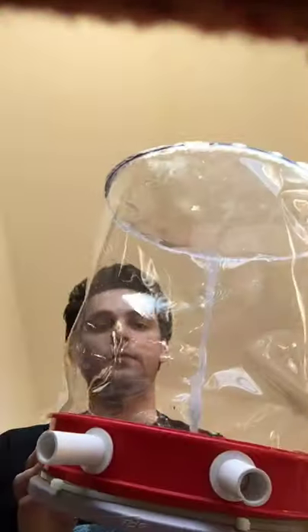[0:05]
Today I'm going to be showing you how you can manufacture a NIV helmet at home, and as far as material costs, this was a little bit less than $20 for me to make. And these have proven to be really effective in helping to treat COVID-19 for two main reasons.
The first reason being that you hook this up to the hospital's air supply directly, so there's no need for a ventilator. And as some of you may have heard, there is a worldwide shortage of ventilators right now, and this has been a real issue with COVID-19. This helps bypass that. The second reason this can be really helpful is once the patient's head is inside, they're in an enclosed environment. So when they're coughing and sneezing, it's not going to be putting the medical staff at nearly as high of a risk.
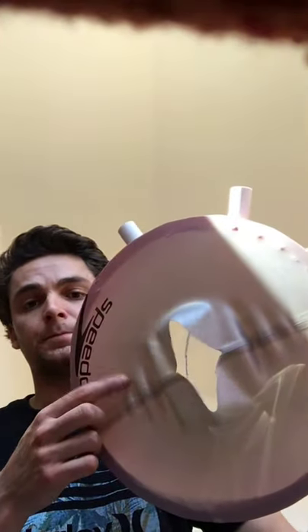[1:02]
So the materials you are going to need: I purchased a clear PVC film, which is this portion, and I bought it off McMaster-Carr.com. I got 0.016 inch thick. And you're also going to need to buy a 5 gallon bucket. You're also going to need to get a swim cap, and you're going to need zip ties. You're going to need to either 3D print these parts, and I will put a link to the STL to 3D print in the description of this video. But alternatively, you could also go to a hardware store and purchase these as PVC fittings.
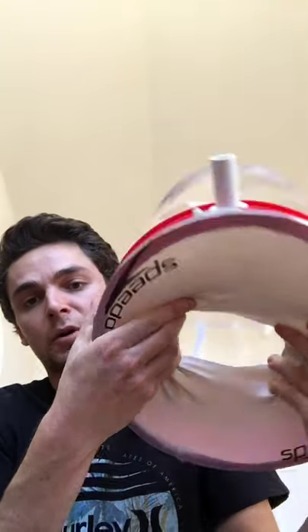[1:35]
And then as far as tools, you're going to need to purchase a glue gun. You're also going to need a jigsaw and a drill. I'm going to show you how easy this is to put on. So I'm just going to go ahead and take my hand, widen the hole here on the bottom, and just stick my head through.
So the first thing we're going to be doing is we're going to make the collar for the NIV helmet. So I went ahead and just bought a 5 gallon bucket. And what I'm going to do is I'm going to be taking out this metal hook, because we're not going to need that. And I'm going to take my drill, and I'm going to be cutting two holes. It doesn't really matter the diameter of the holes. I mean, you don't want to do huge, but in this case, I'll be doing like 1/8 of an inch. And this is really just to make a pilot hole for me to use my jigsaw.
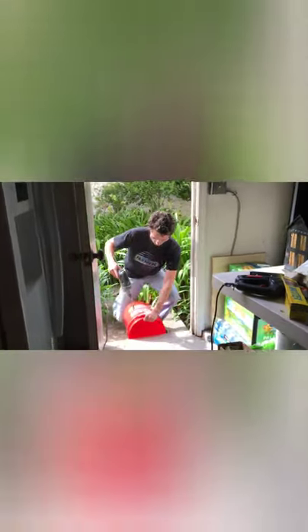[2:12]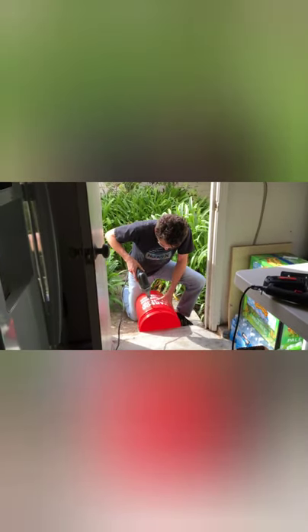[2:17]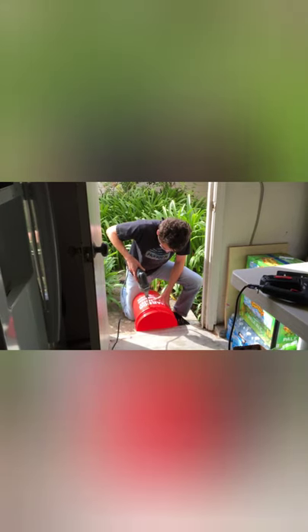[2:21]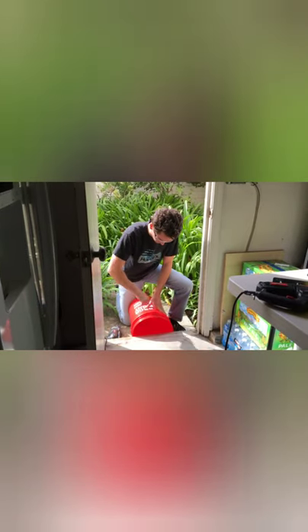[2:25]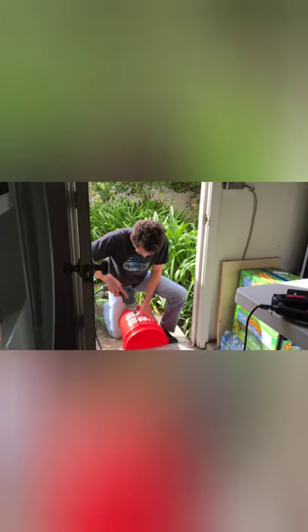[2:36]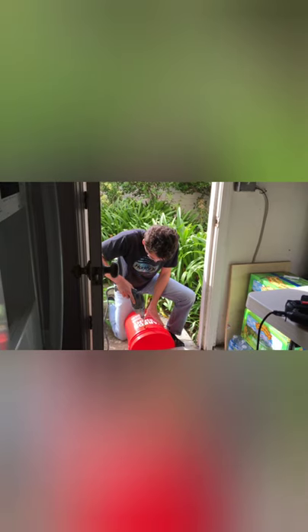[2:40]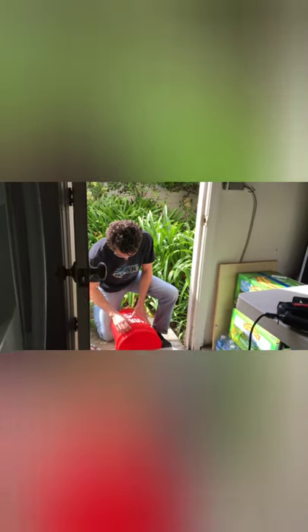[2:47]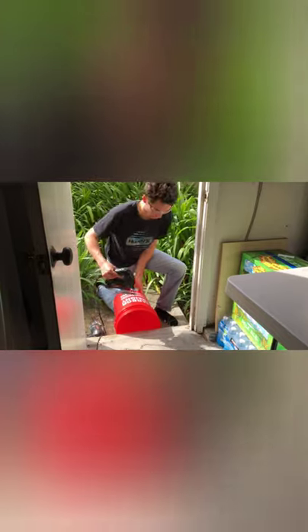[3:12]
That hole's not quite big enough, so I'm just going to cut a second one just to make sure I have plenty of room for the jigsaw blade to go in. Okay. So now I'm going to go ahead and take my jigsaw. Now the idea here is I'm going to be cutting all the way around, so luckily I have this little sort of lip here to allow me to guide along. But what I'm going to be doing is just having a hard surface behind it, so it's not going to go anywhere. I'm going to slide the jigsaw blade in, I'm going to begin to cut, and as I'm cutting I'm just going to be rotating the bucket by hand.
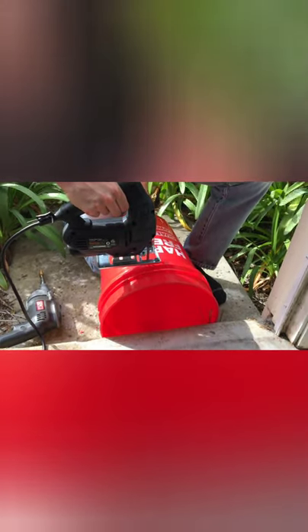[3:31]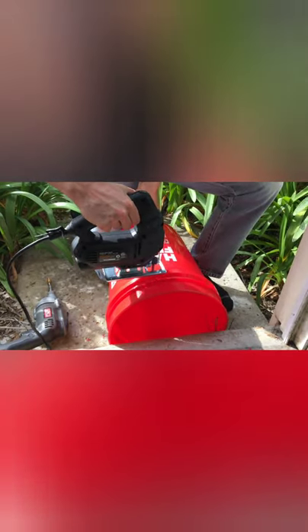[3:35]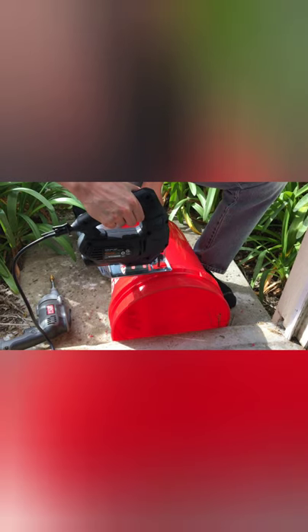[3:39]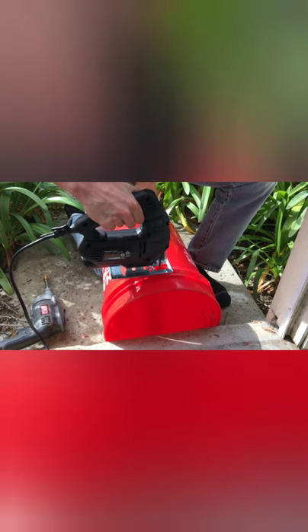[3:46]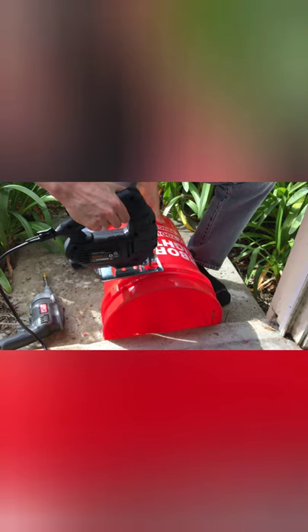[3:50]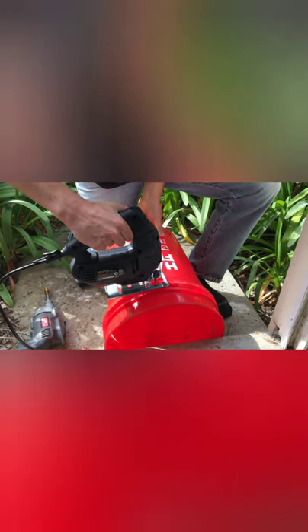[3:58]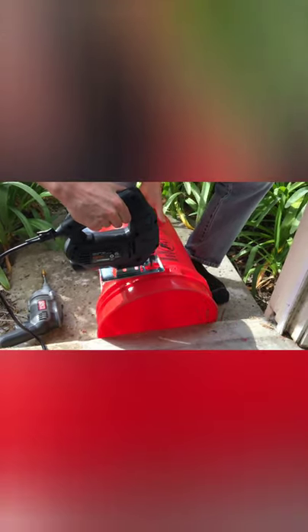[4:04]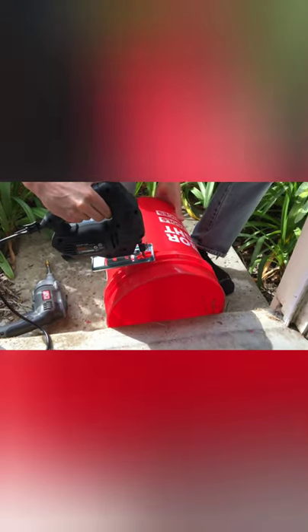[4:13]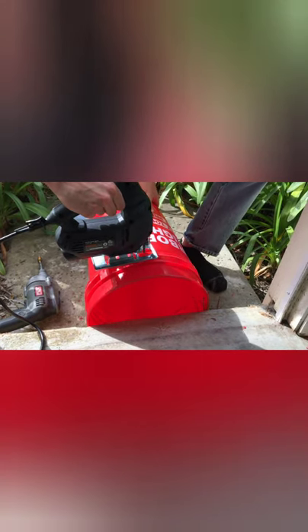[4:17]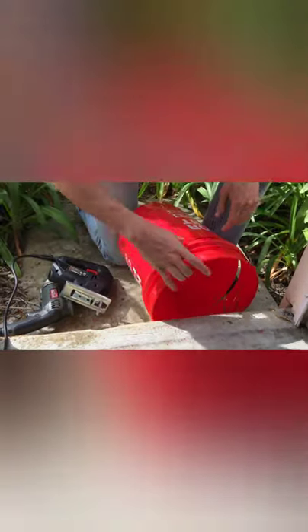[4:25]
Alright, so we have our first piece of the collar cut out, and now what we're going to be doing here is, the collar is two pieces, so we have the inner and outer piece. So what I'm going to do now is I'm going to go ahead and put that upside down. What I'm going to do now is I'm going to go ahead and slide the piece we just cut over the other piece, and then we're going to make a secondary cut. Same idea, we can just use this as a guide.
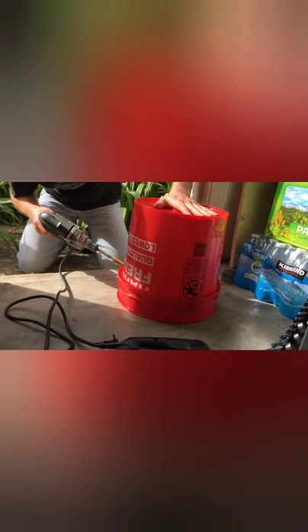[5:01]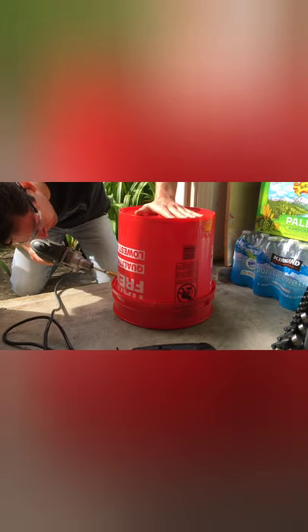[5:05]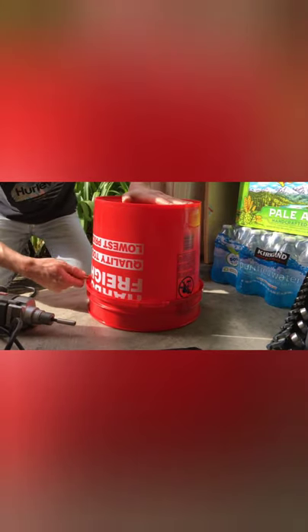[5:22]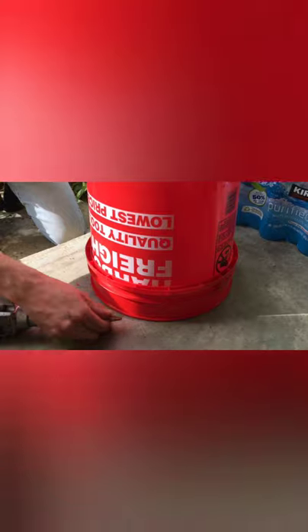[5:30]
So what I'm going to do now is I'm going to switch back to my drill to cut the holes. Alright, so just like before, I'm going to be drilling some pilot holes just for us to guide the jigsaw along. Okay, go ahead and cut a second hole. Just want to make sure I allow plenty of room for that jigsaw blade to get in there to get a good first cut going before we start rolling. All right, that should be good. Okay, now I'm going to switch back to my jigsaw.
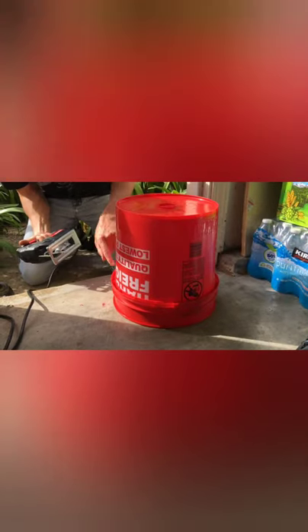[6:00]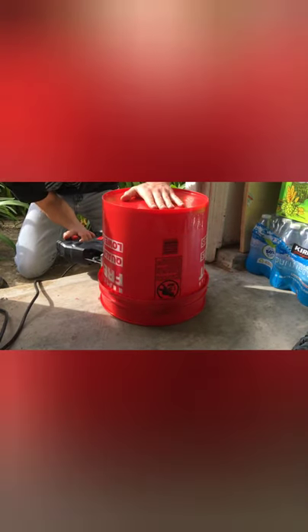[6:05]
Got my pilot hole here just for you guys to see. So yeah, now we just have it sitting on the ground, and we're just going to be making a cut all the way around so we can have that second collar piece. Okay. So here we go, and you just want to be resting on this lip so we can get it consistent all the way around. Alright, that looks good to me. Pick up where I left off.
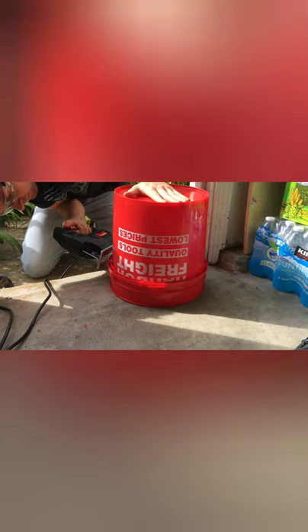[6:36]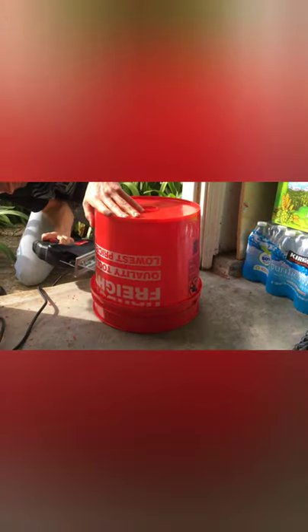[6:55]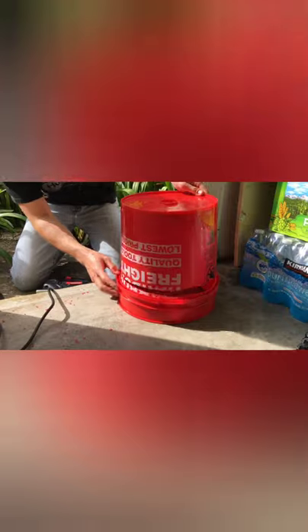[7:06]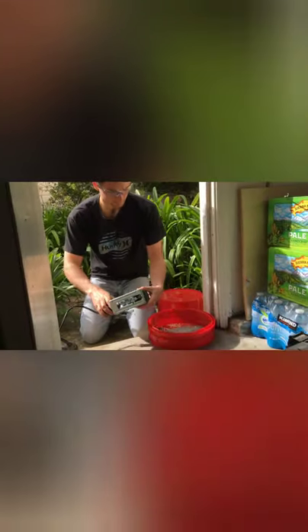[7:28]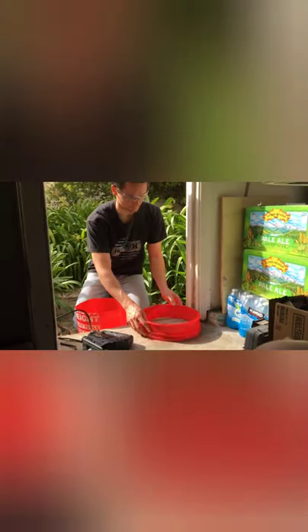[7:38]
Almost cut through all the way. It's at a little bit of an awkward point, so I'm just going to support it on the back here. Come back in with my blade and finish up this cut. All right, so just like that, the piece has been cut. So now, as you folks can see, we have two collar pieces. One is just going to slide into the other, just like that. So that is how we are going to make the collar.
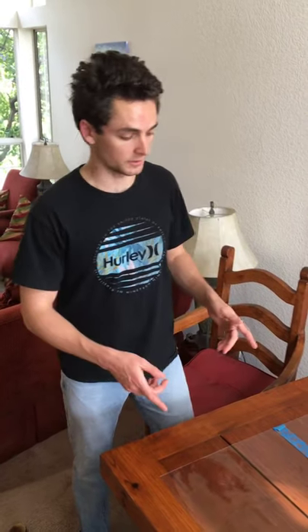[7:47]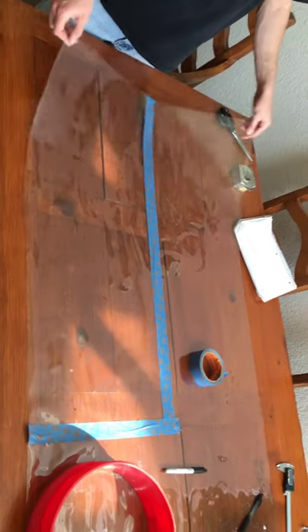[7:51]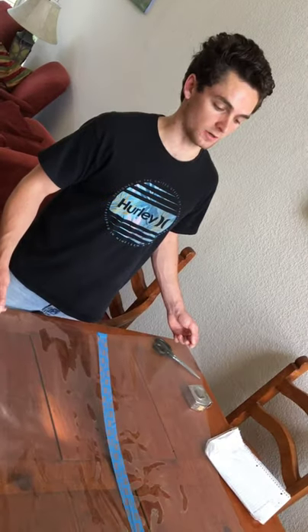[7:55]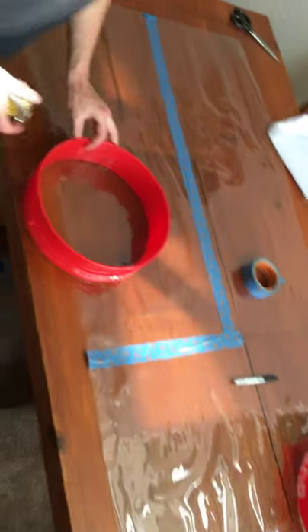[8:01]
Okay, so the next thing we're going to do is cut out the clear portion of the NIV helmet. So what I did was I went ahead and purchased this PVC that is 0.016 inch thick, and I purchased this off McMaster-Carr.com. And I went ahead and took a measurement of the inner diameter of the helmet, which is what we're concerned about, is
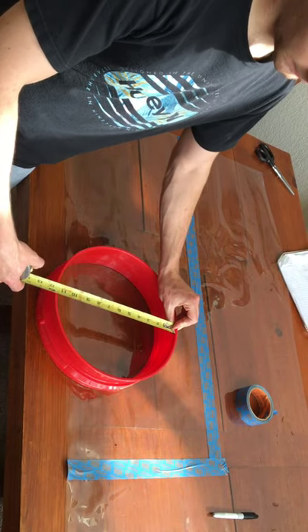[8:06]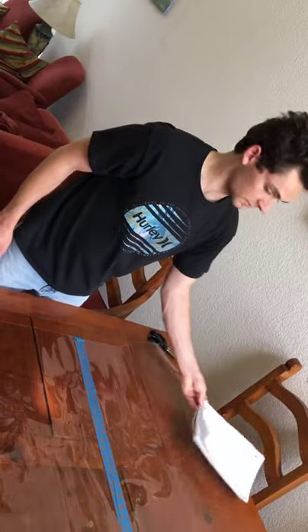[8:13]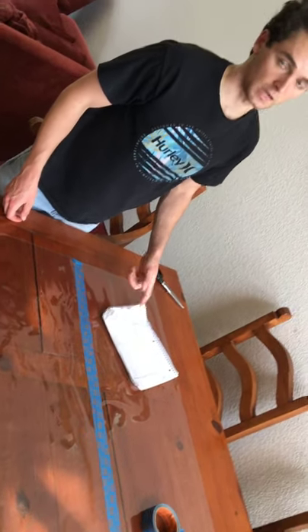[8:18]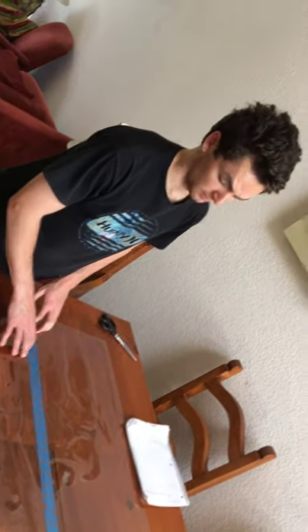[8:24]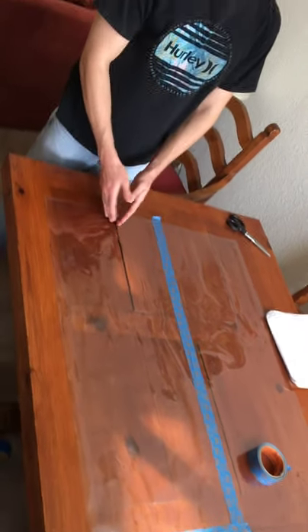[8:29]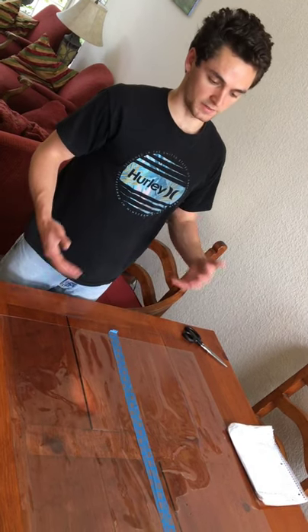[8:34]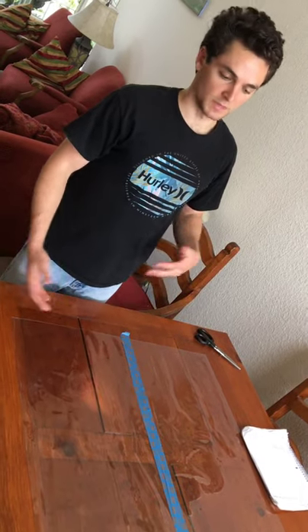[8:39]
11 5/16 inches. So if I take that number, I can then convert it and find that the circumference, so the overall length of the NIV, should be 35.5393 inches. So I went ahead, measured it out, marked it. This goes along 35.5939 inches, and I've made it 14 1/4 inches tall. That size is pretty standard for an adult. That should allow plenty of room, but maybe you're making a NIV for somebody with large hair, you might want to make it a little bit taller.
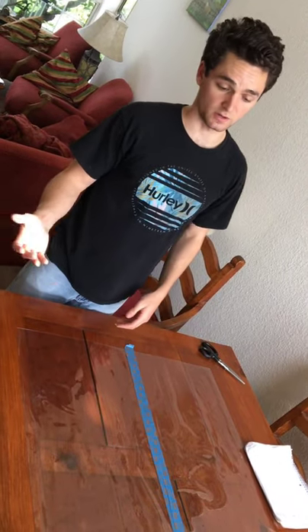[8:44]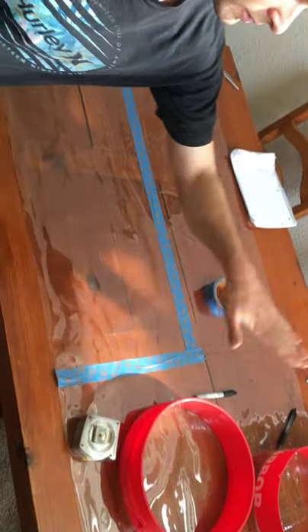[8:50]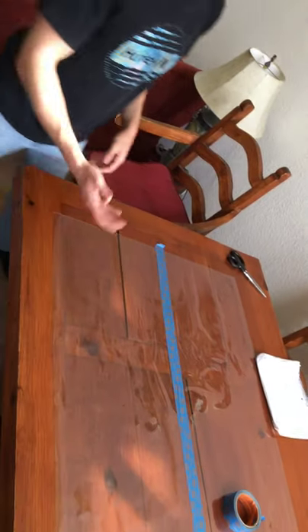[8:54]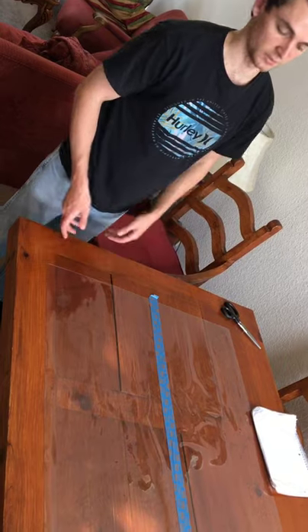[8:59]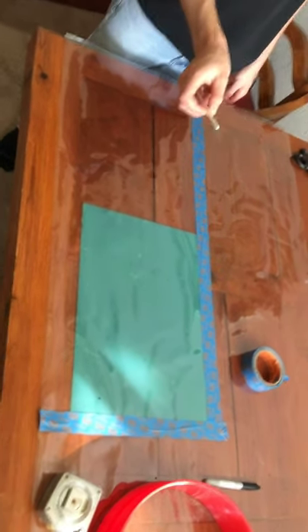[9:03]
If you're making one for a child, you're also going to probably want to use a smaller diameter piece when you're making the bucket cut. So you're going to want to cut lower down in the bucket to make a smaller collar to fit a child. And then accordingly, you're going to want to make this shorter. If you have a small child wearing the helmet, it's not going to have to be as tall.
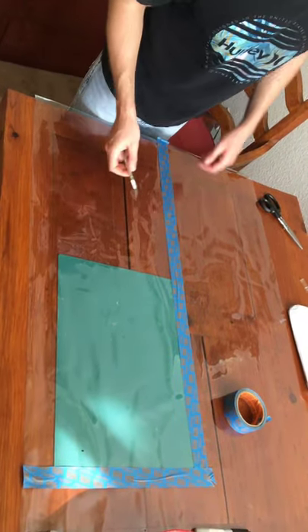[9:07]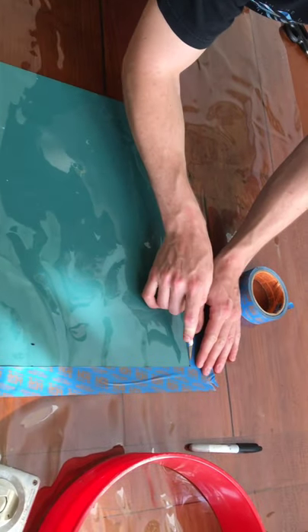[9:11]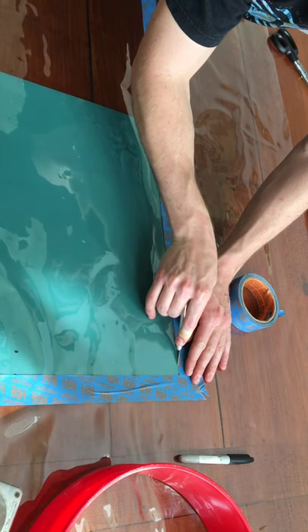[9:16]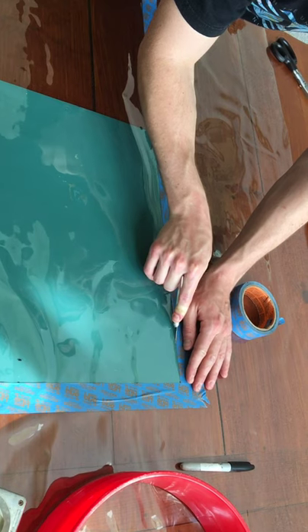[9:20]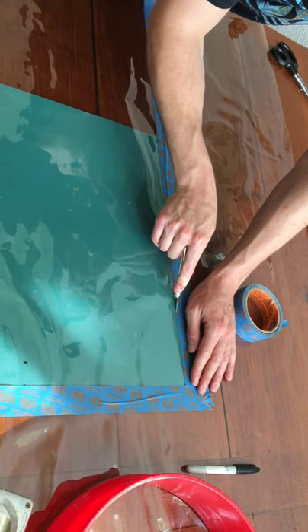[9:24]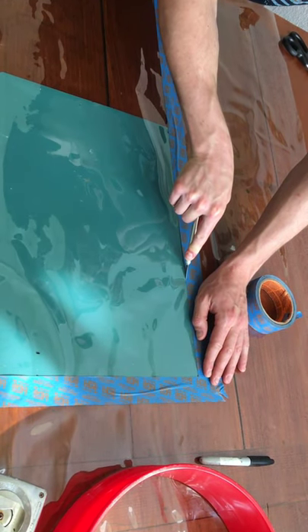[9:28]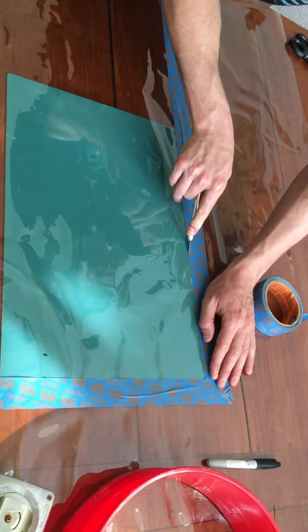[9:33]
So I would recommend using an X-Acto knife. You could use scissors, but an X-Acto knife is going to let you get a more accurate cut. So I'm just going to go ahead and follow along the tape. Like I said, you could use scissors, but you're just not going to get nearly as straight and clean of a line as with an X-Acto knife. So this is definitely preferred, and I just have a little material backing this just so I don't mess up my dining room table.
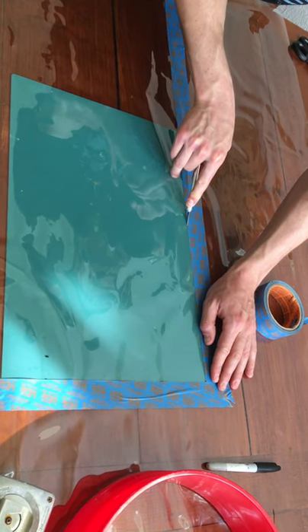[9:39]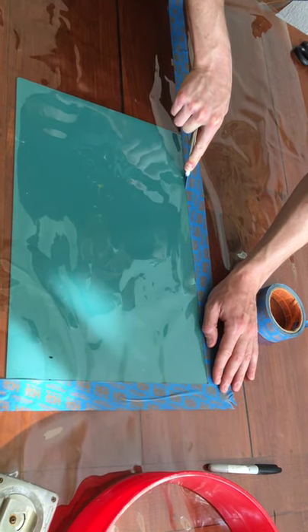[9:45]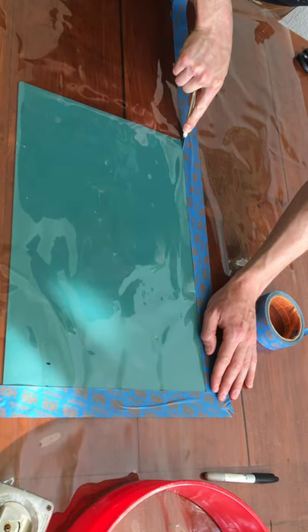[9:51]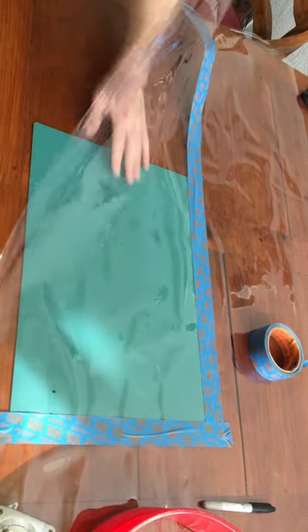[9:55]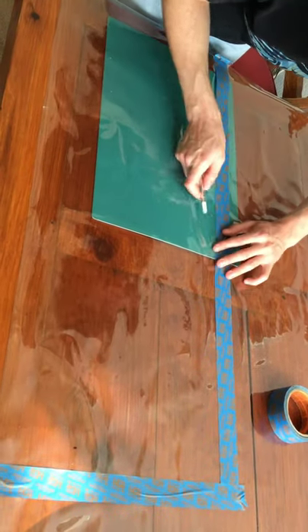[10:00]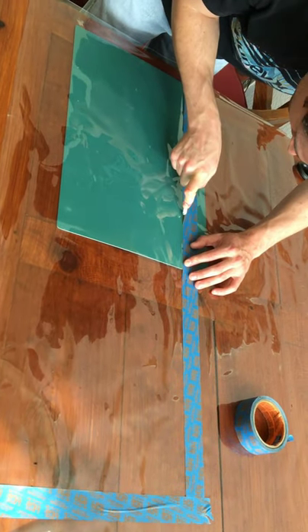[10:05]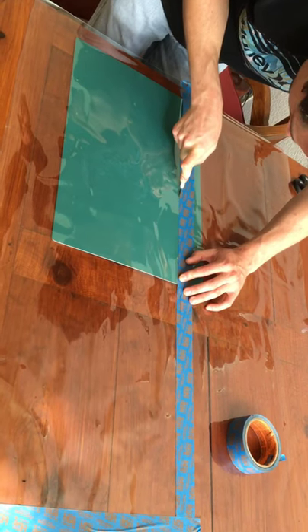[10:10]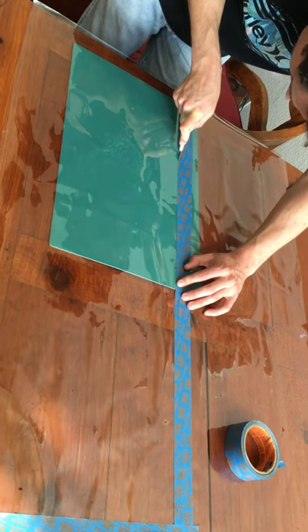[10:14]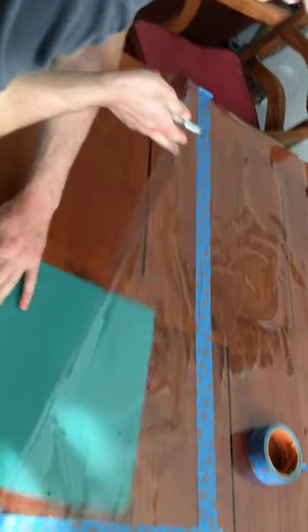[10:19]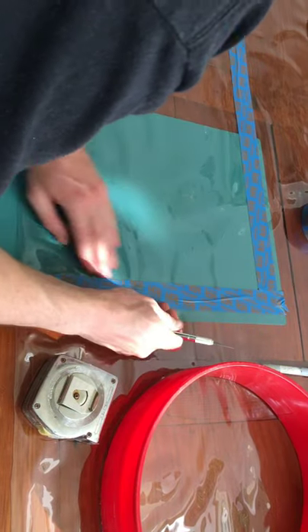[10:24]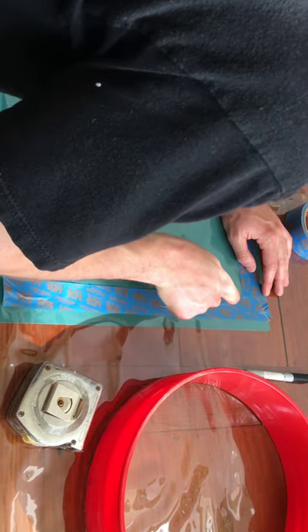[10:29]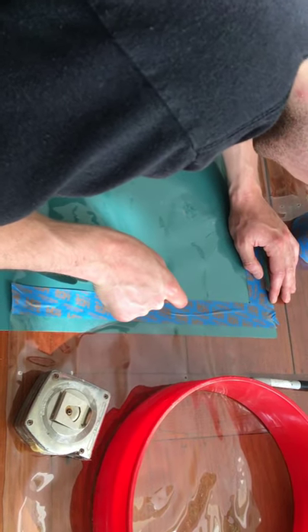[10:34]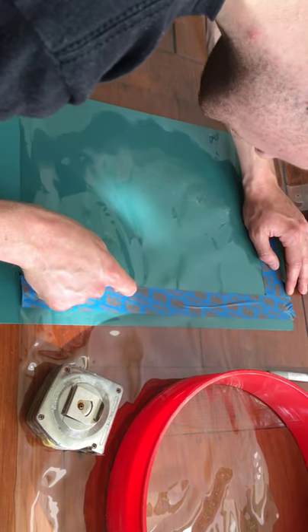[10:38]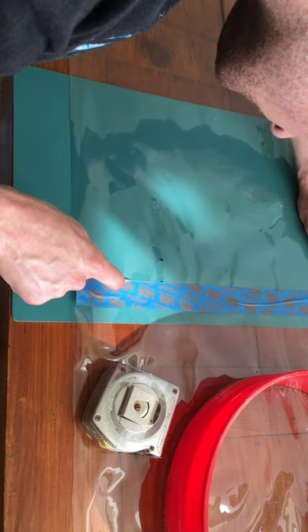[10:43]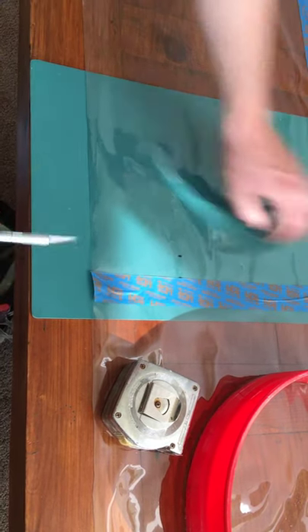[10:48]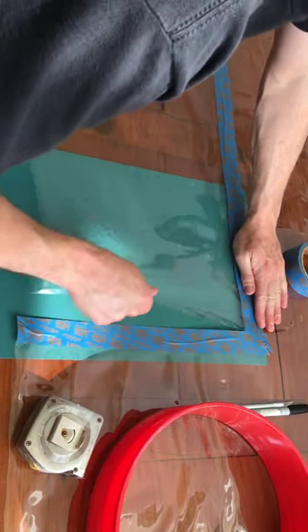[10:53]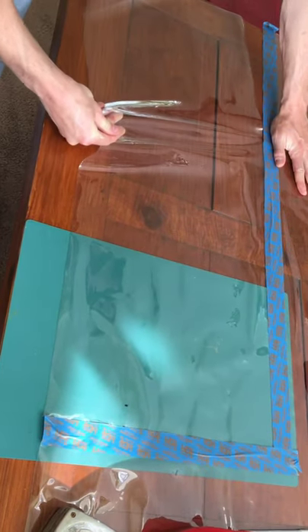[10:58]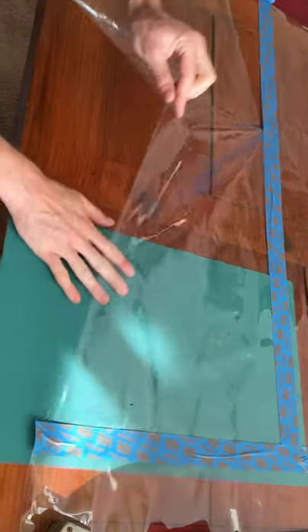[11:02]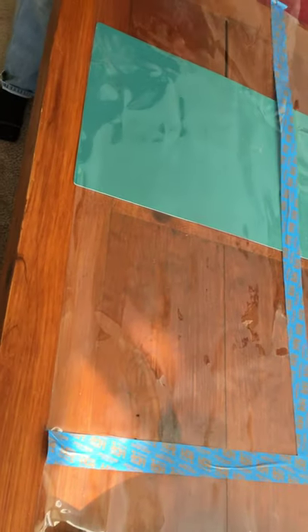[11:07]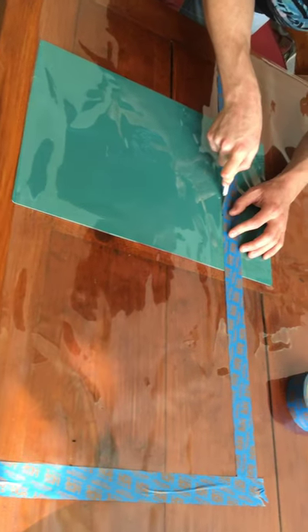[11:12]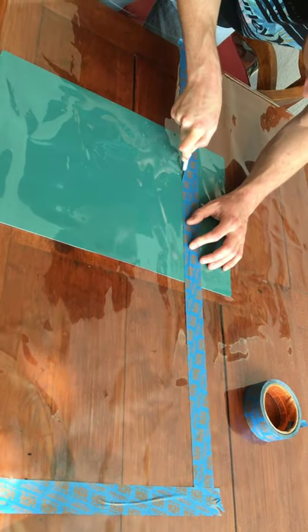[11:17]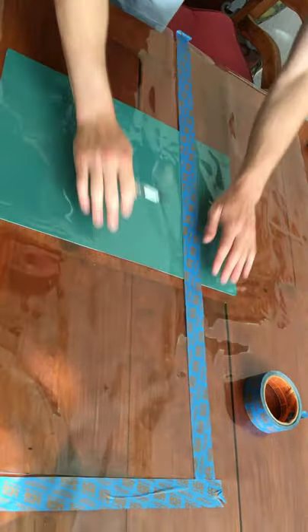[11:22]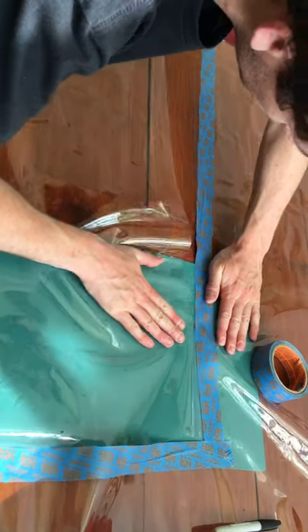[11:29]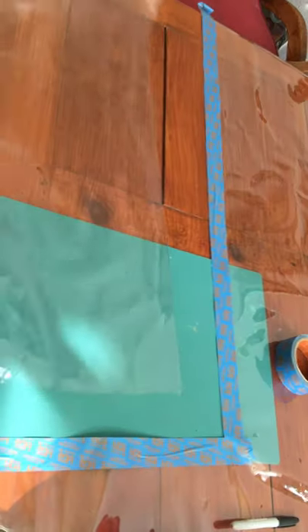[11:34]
All right, about halfway on this cut. All right, then I'm going to come over and cut this other side. Then you might find you're going to have to go back and recut one particular spot. There's one piece cut, and now the next piece we're going to have to cut is the top of the helmet, the top of the clear cylinder.
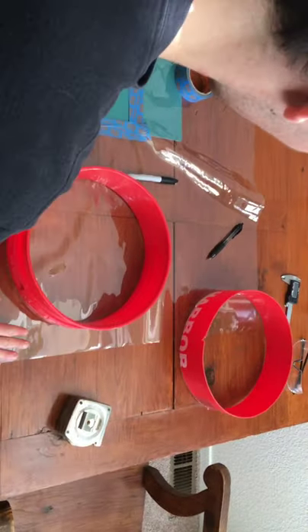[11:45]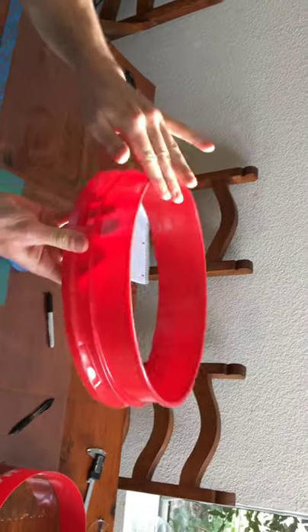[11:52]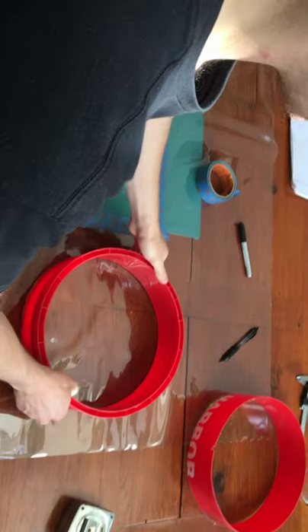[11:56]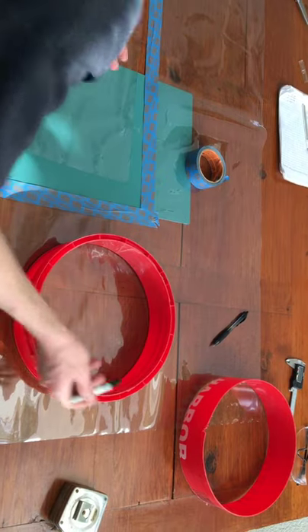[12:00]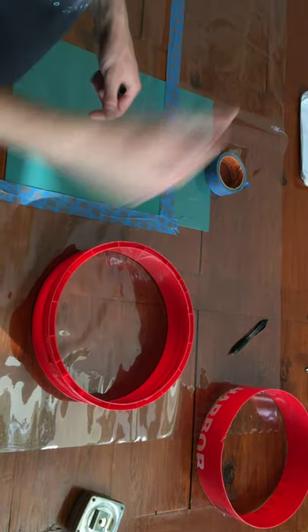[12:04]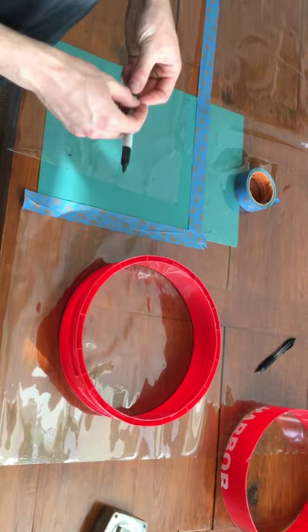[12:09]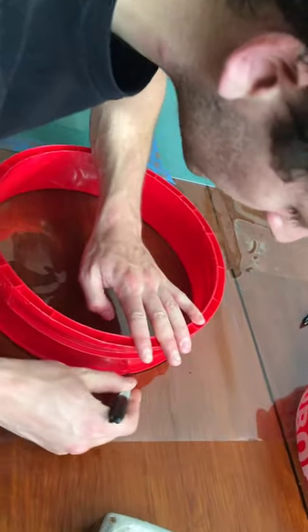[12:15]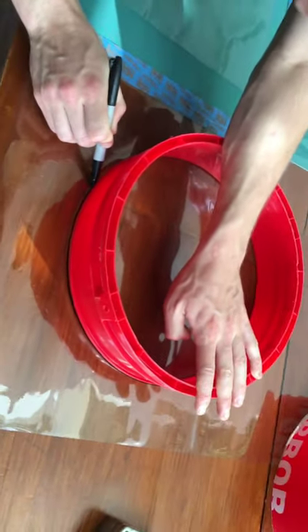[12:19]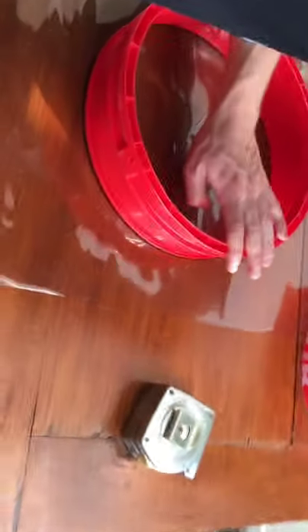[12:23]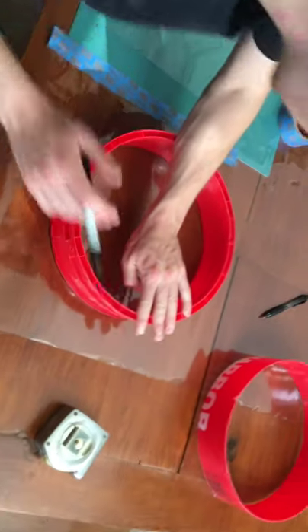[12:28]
So what I'm going to do is take the bucket piece that we cut from earlier, and this is going to be the very top of the bucket, so that's the piece that I'm going to want facing down to get the diameter from. And technically I should be scribing the inside to get the same diameter to match the helmet. But I'm actually going to scribe along the outside just to allow a little bit of extra material for when we're assembling this later. Just going to scribe this all the way along.
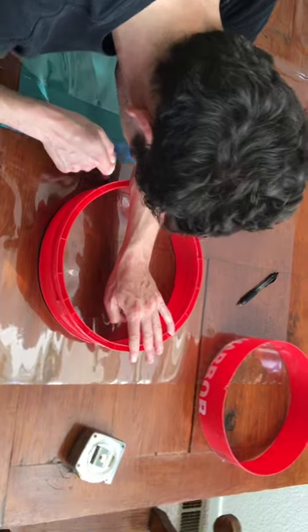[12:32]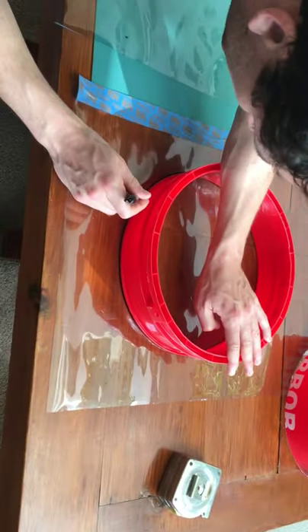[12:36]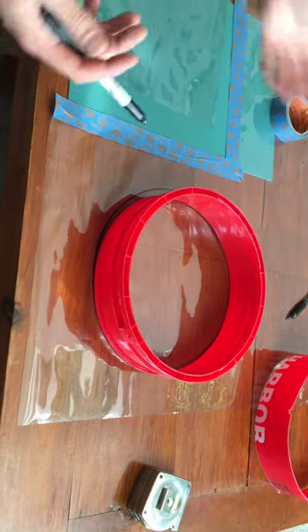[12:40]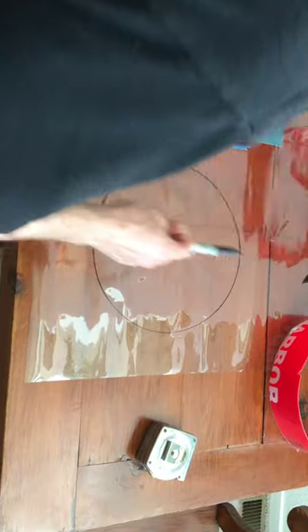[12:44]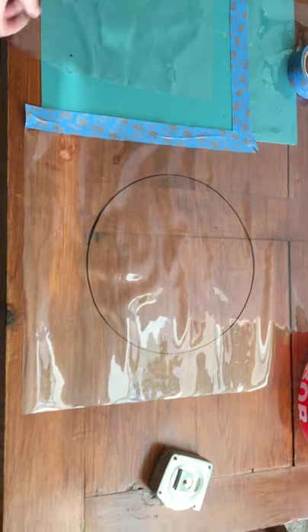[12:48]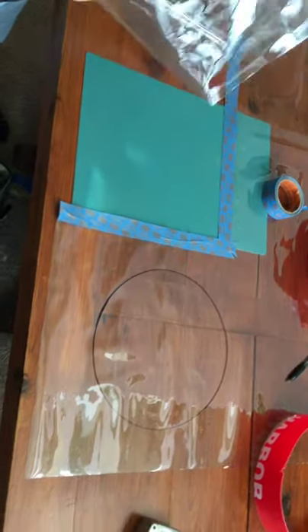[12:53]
Make sure that when you're scribing it, you are absolutely certain that this collar is going to stay in place. If you're making the marking and then you shift your movements, it's going to throw the whole thing off. So I just kind of strong-armed it there, and now we're ready to make a cut here also. This one's going to take a little bit more finessing to make the cut. It's not just a straight cut.
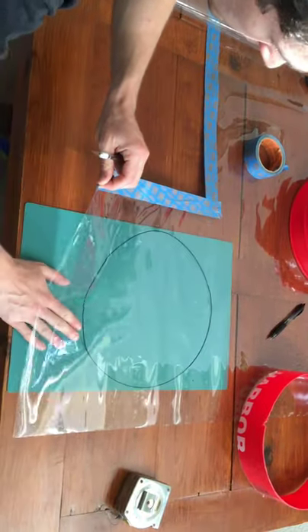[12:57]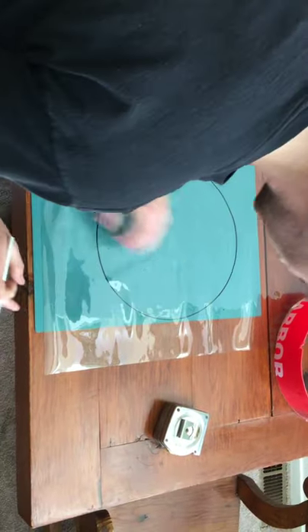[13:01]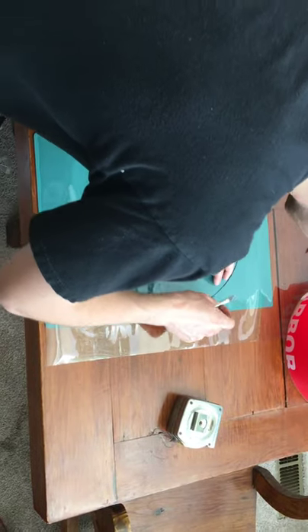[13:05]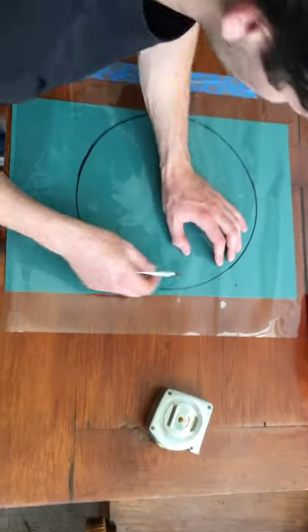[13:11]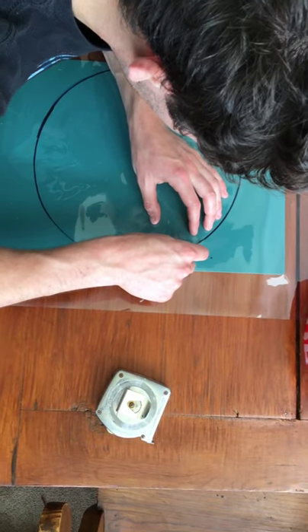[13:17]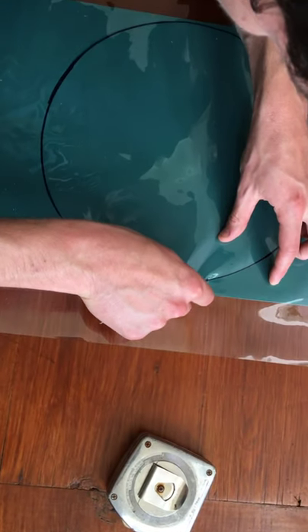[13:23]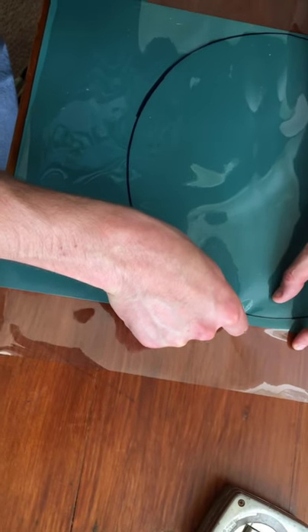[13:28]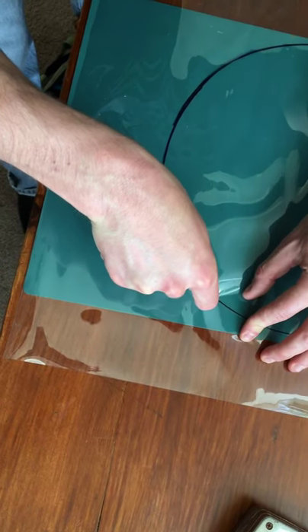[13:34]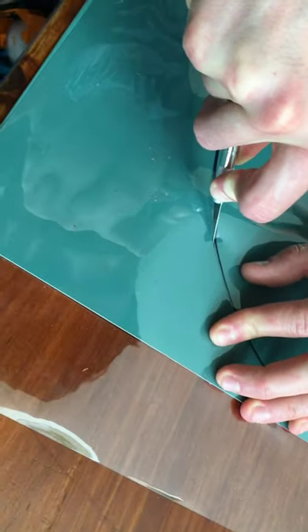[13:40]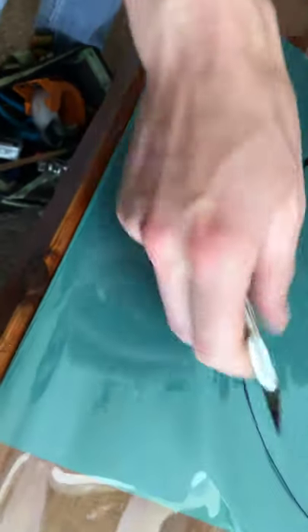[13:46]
And I'm going to be cutting towards the outside of that marking I made just to allow a little bit more material for us to work with. And it's okay if you overcut a little bit, you just don't want to undercut. That's really the name of the game.
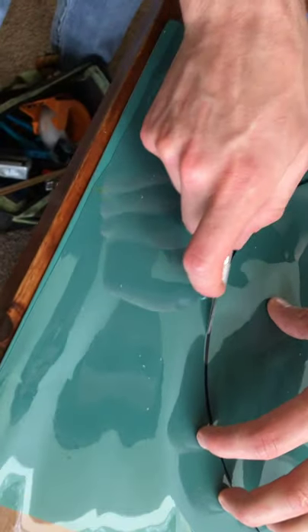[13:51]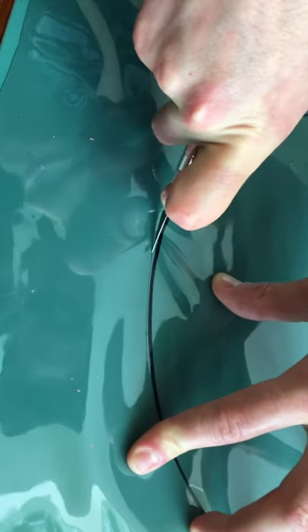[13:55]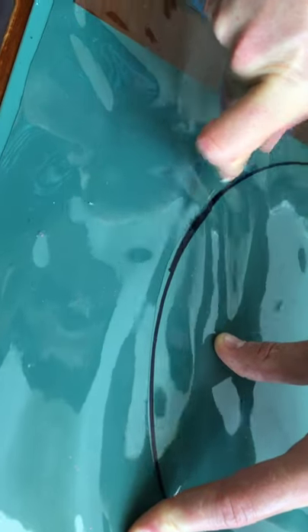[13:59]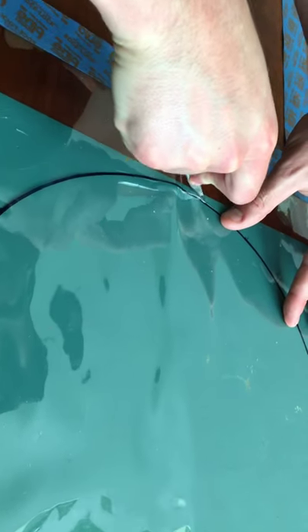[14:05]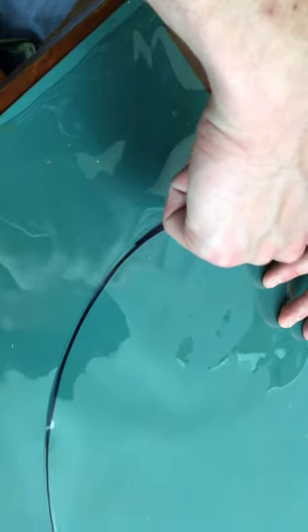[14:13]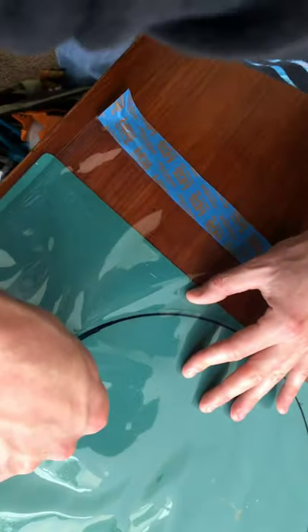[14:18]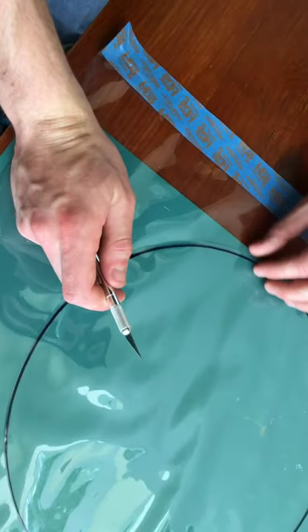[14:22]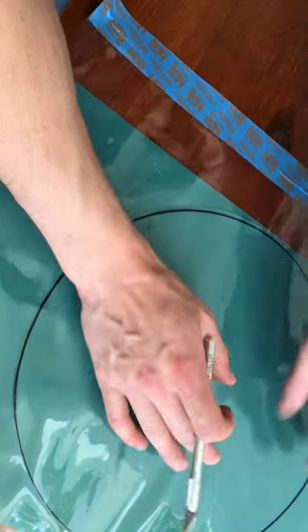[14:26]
I'm actually overcutting on purpose here. Like I said, we want to allow ourselves extra material just to play it safe. It'll assemble just fine if you overcut it. Might not look quite as clean, but it'll assemble just fine. If you undercut it, you're going to have to recut this portion. It's not going to work.
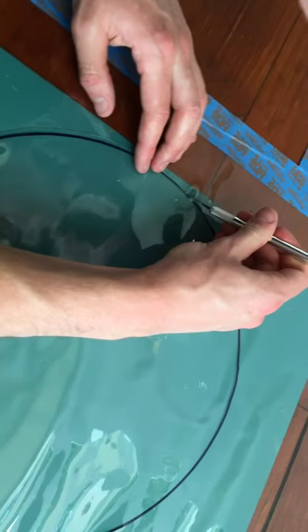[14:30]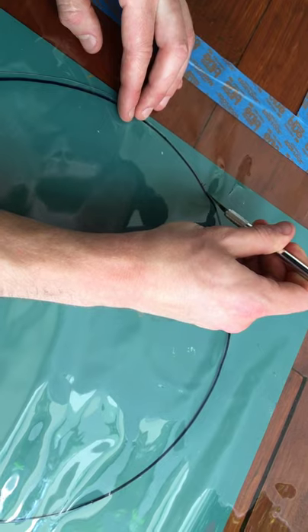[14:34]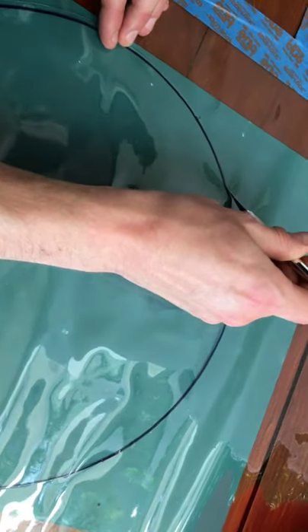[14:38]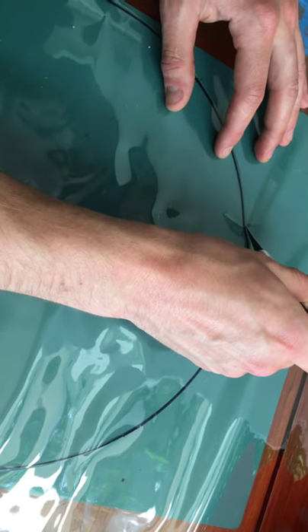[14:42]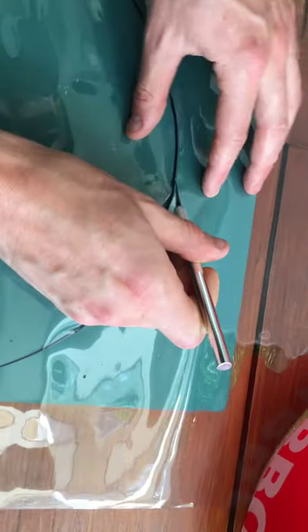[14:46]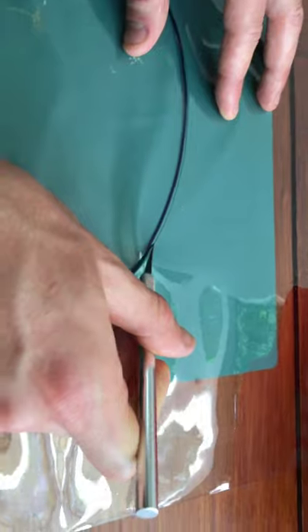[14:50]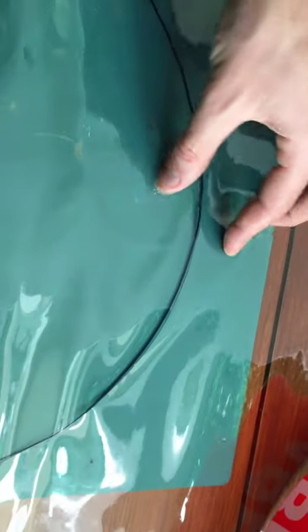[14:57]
Alright, we want to make sure we meet up our ending cut with our initial cut. Okay. So there we go. We have our two pieces here.
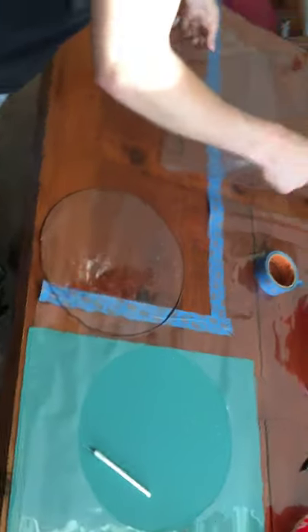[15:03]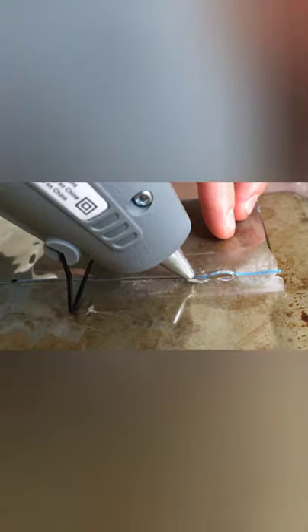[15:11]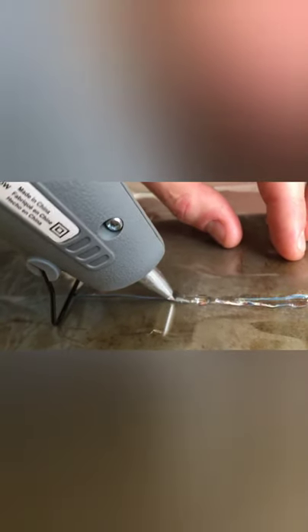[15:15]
Okay, so what I've done is just got this glue gun here, and I'm going to be following that seam along with the hot glue, and you could consider this like welding, except for plastic. So making sure to apply plenty of glue all along the seam. Definitely don't want to be stingy with it, because if we miss a spot, that's going to allow air leaks, which we definitely do not want.
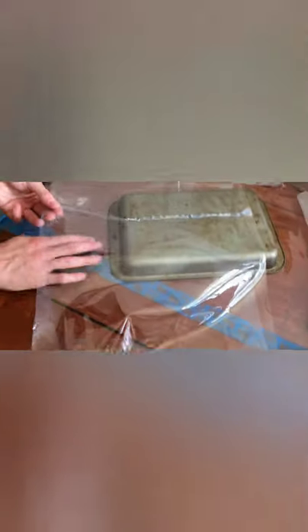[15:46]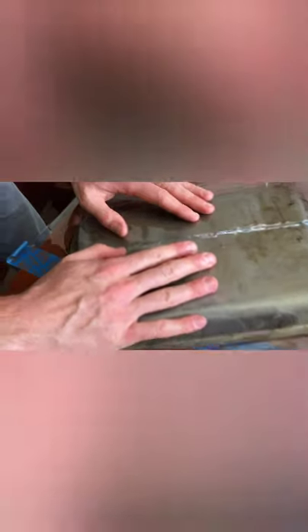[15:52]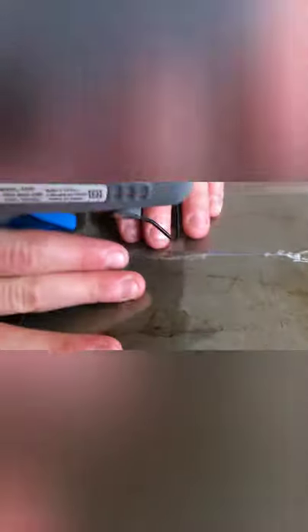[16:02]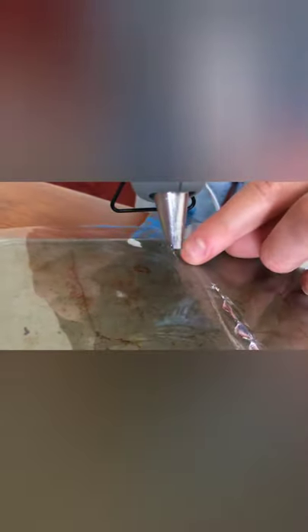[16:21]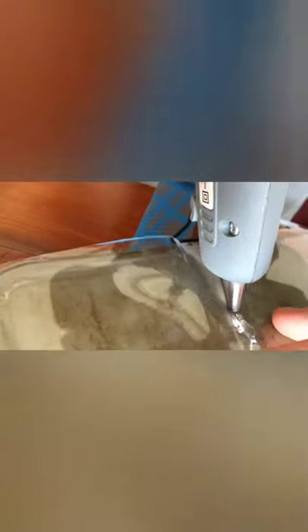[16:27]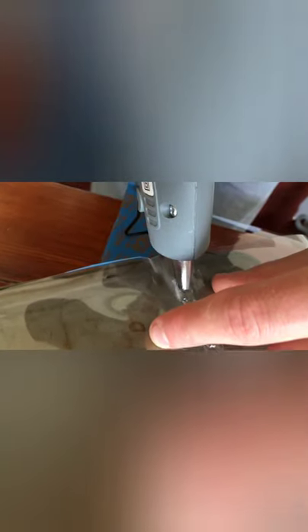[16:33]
Right, I'm just going to be moving this back piece along. All right. You might get some gaps along the way, so you just want to take your fingers and make sure that you can seal them together as close as you can while not allowing any overlap. And something I should say too is I moved this back piece a little bit too fast. I should have really let it sit there for a bit to let that glue solidify before moving down to this bottom piece. And there's sort of a larger gap here, so I'm going to use even more glue.
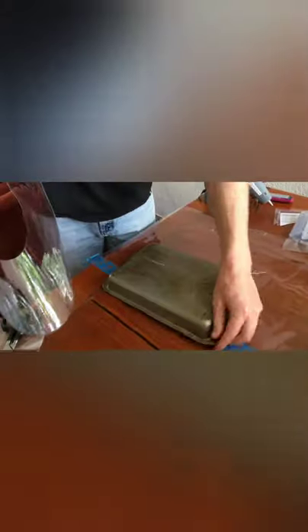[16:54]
Okay, so now I'm just going to let this sit and dry. All right, so we've allowed plenty of time for this to dry. And what I'm going to do now is go ahead and flip this over, and I'm going to use the hot glue on the inside. This is really just to ensure we're getting A, an airtight seal as far as this piece goes, and B, to help strengthen it to make sure it's not going to just come apart.
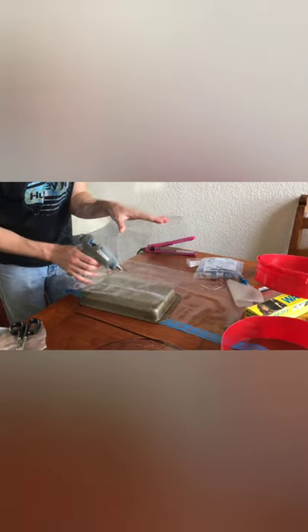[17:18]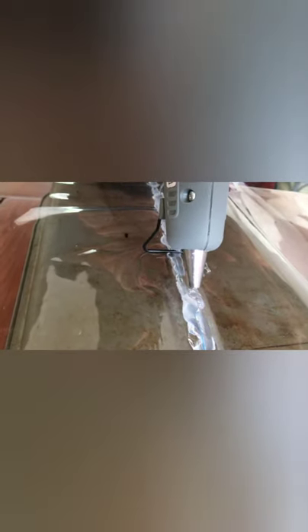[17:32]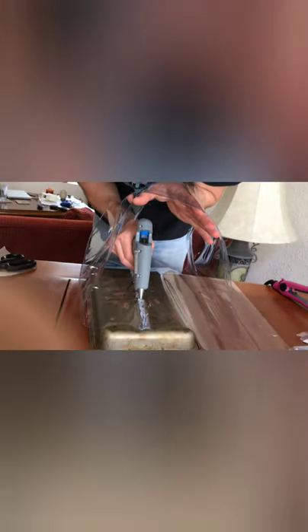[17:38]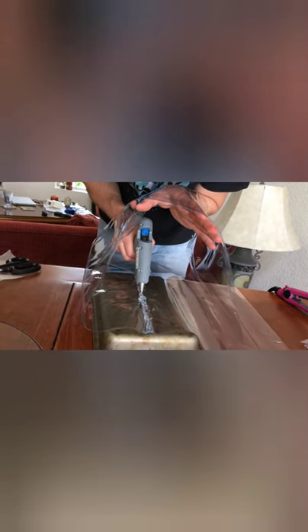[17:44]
So, got my glue gun, and there's different ways to do this, but in my case, I'm just going to take my arm and hold this up, and then I'll come in with the glue gun and follow along. And I did make the mistake before of moving this piece a little too fast before the glue dried. So this time we're really going to allow plenty of time for this glue to dry before we move it along.
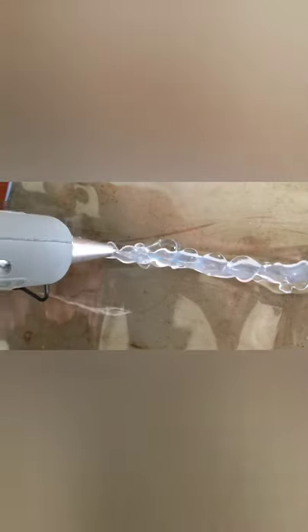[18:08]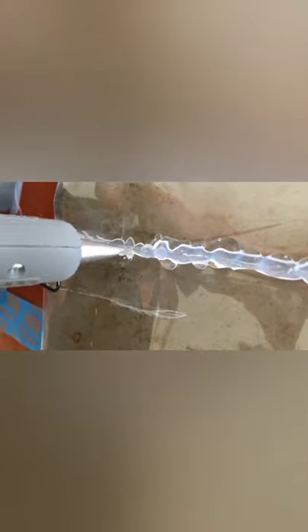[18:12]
Like I said, you want to apply a good amount of this glue on there, plenty of it, especially because sometimes it can be kind of hard to see where you made that original seal. So we're going to use plenty of glue all along. In any spots where it looks like I haven't put enough glue, or it might look like there could potentially be a small area where there could be a leak, I'm just going to throw more glue on there just to play it safe.
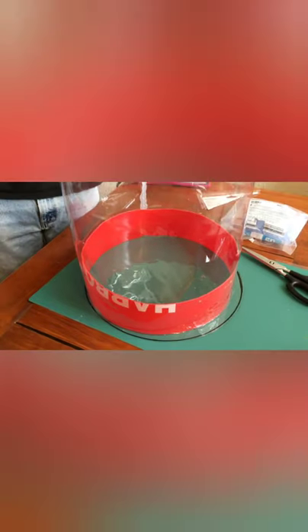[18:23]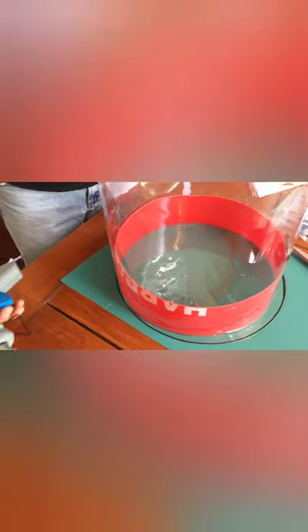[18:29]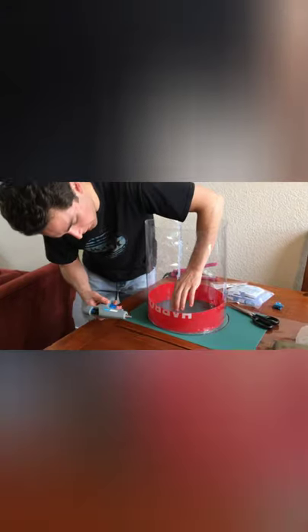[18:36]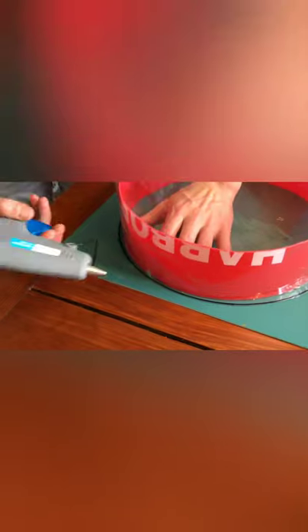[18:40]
Okay, so what I've done is I've taken the inner collar piece and I've made it so that what would usually be the top piece, if you're just looking at the bucket from regular view, is going to be facing down. So what I'm going to do now is, I've got my hot glue gun again, and I'm trying to match this piece and the circular piece we cut together. I have everything lined up, and I'm aiming to have this piece right here glued so that it's touching that inner circle that we drew. That's the goal.
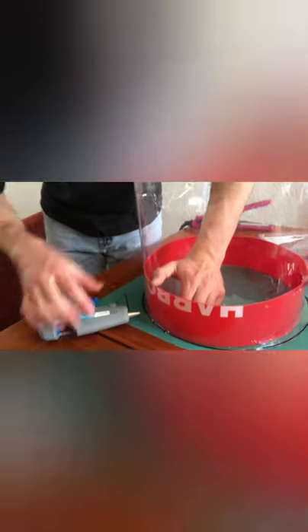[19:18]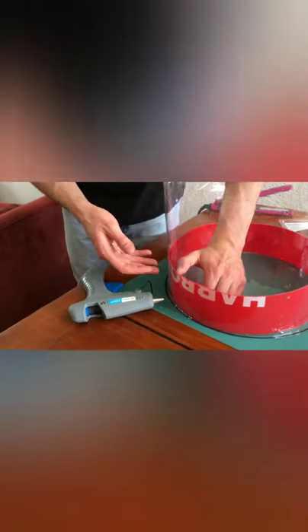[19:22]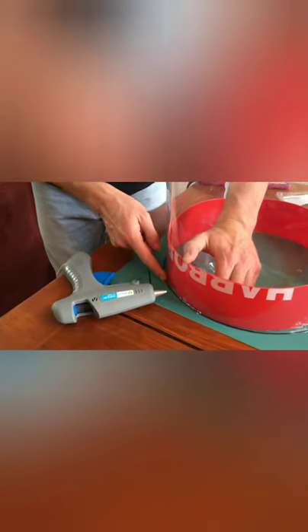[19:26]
So I'm going to come along with the glue, slowly but surely. And there's going to be a lot of readjustment involved here. It's not already going to be set up perfectly, so it's going to be a process of gluing one segment, and then letting it dry. And then you're moving along and moving the bag along so that it's going to continue to line up with that black circle.
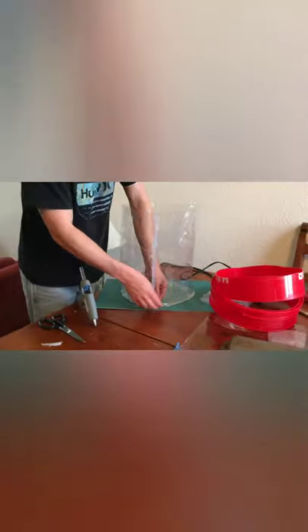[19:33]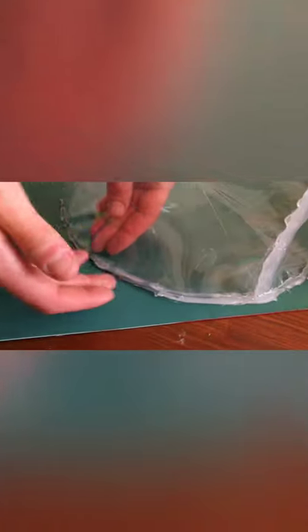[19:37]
Okay, so now that it's been sealed all the way around, and like I said, you're going to have to do it in sections. Let it dry, move on, do another section to make sure that you have it properly lined up all the way around. But now we've allowed plenty of time for this glue to dry, so we're going to begin the assembly. So we're going to take this base piece and this lip here, we're going to have that touching the ground.
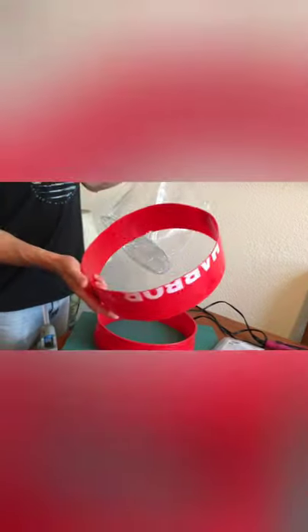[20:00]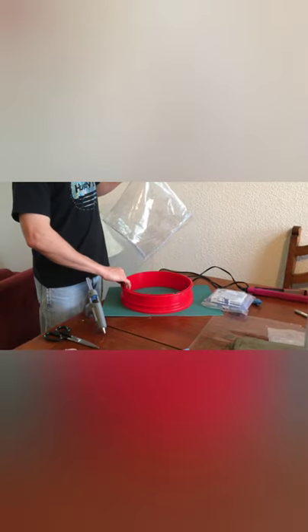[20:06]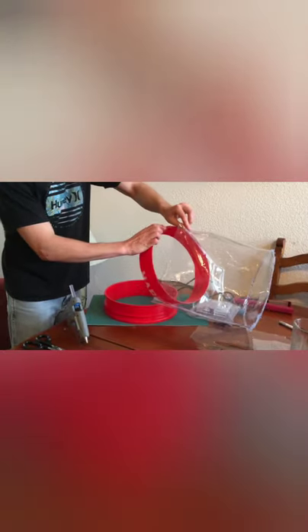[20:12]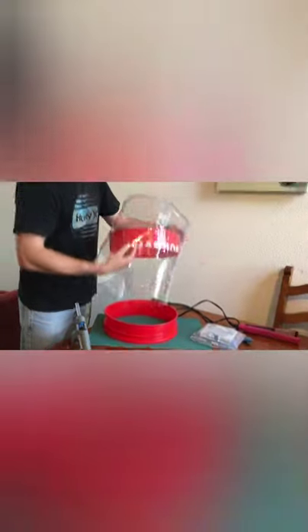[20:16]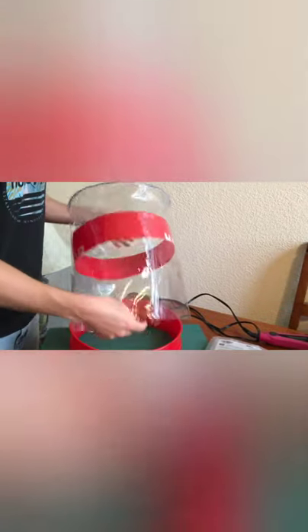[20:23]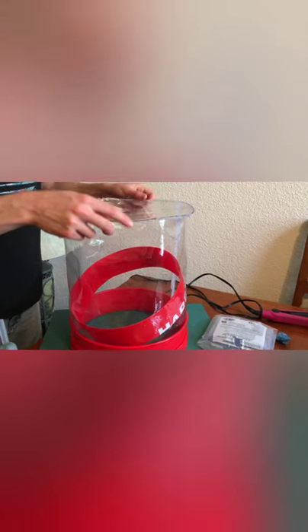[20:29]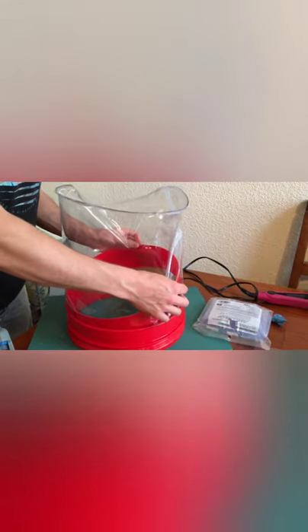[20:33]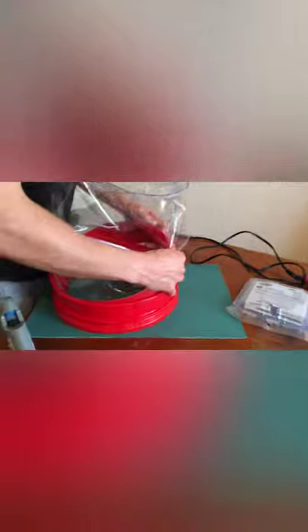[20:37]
And then we're going to take our inner collar, and you've got to think about how this is going to be oriented. So the smaller diameter section is also going to be touching the ground, just like that. So what I'm going to do is stick this inside the helmet. I'm going to slide this in. I want to make sure that the clear plastic portion is going all the way down. And then once I've done that, I'm just going to shimmy down the inner collar piece. It might take a little bit of maneuvering to get it.
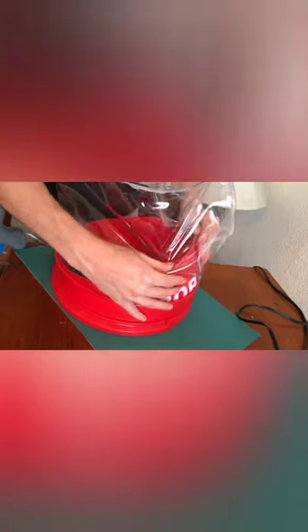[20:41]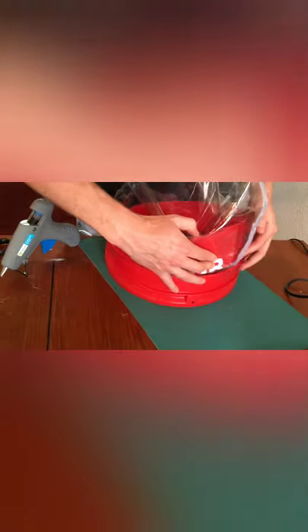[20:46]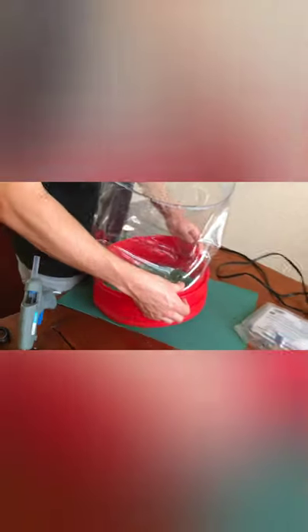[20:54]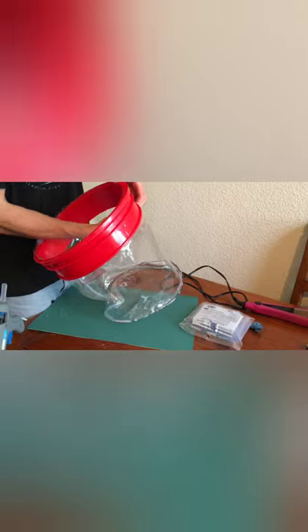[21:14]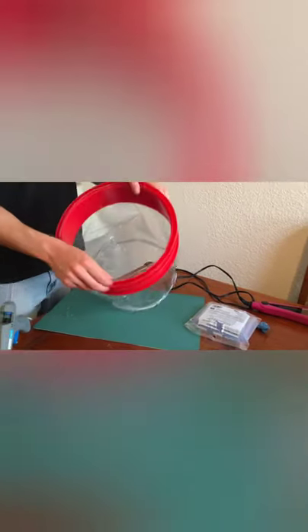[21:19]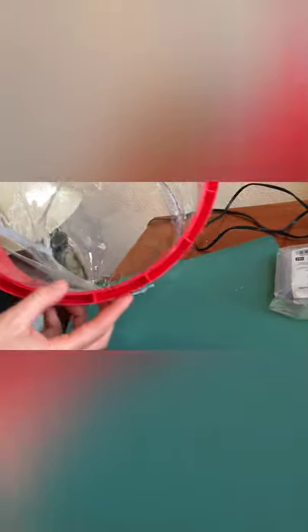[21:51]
So my goal here is to get the clear plastic portion to have some overhang, not too much though. Just enough for that glue to catch it. So kind of just going around, straightening it out. Okay, so that looks good. So we've got it pretty consistently all the way around, just touching the inner and the outer collar. I've got that clear plastic portion touching.
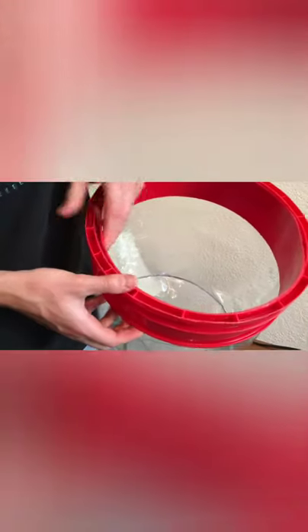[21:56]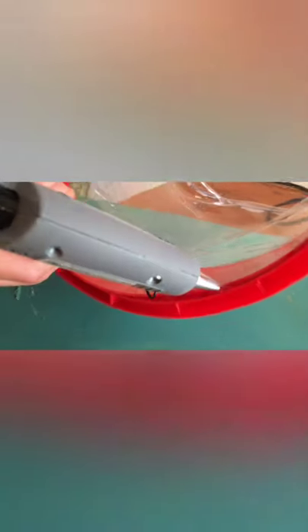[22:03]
So now what we're gonna do is we are going to go ahead and glue it on. So this is just helping us to create a better seal. So I'm gonna just be gluing all the way around.
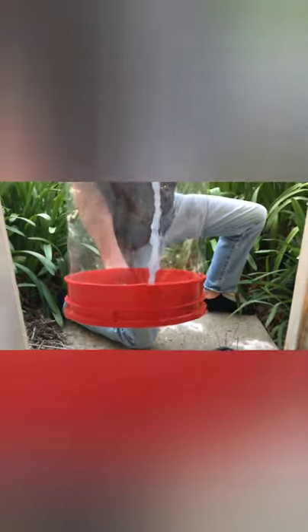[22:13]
So the next thing we're gonna do, we're gonna be cutting two different holes. Each of them are gonna be 3/4 inch. And what I've done is the portion of the bag that has all the glue going down, I want that to be on the back side. I don't want that in front of the patient's face. So the opposite side of that, we're gonna cut the two holes. It's not totally critical where you place them. I just kind of want them on the front and I want plenty of spacing. So I would say about at least 3 to 4 inches of spacing between them.
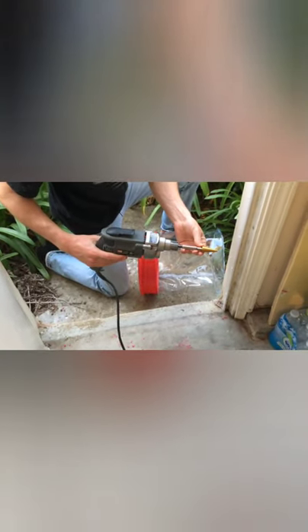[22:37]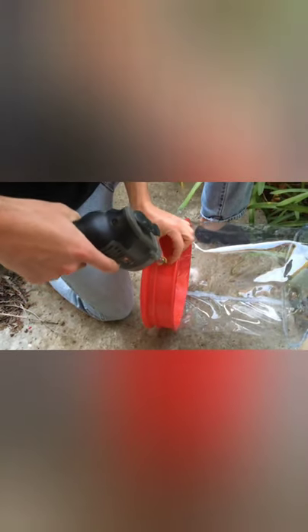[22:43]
So I've got my step bit here. It's gonna cut to 3/4 inch at the widest diameter. So I'm gonna cut the first hole and I want this to be aligned within the center here. All right.
And you got to be really careful here, but what I'm doing is basically I'm taking my two fingers, putting it behind to support that inner bracket, and I'm allowing that bit to go through. You really got to be careful here. This can be dangerous, but I do need a way to support that inner collar. So I know that this bit is not going to hit my fingers right now. I'm certain.
Okay. So there's one hole down. Let's cut the second hole. That looks about good to me.
So I've got a 3D printed part here, and I'll put a link to this STL for you to 3D print in the description of the video. But you can also just go to a Home Depot, really most hardware stores, and they'll also have a PVC piece similar to this that you can buy. So what I'm going to do is just slide this through. You're going to have to thread this in by hand. Definitely gonna take some elbow grease to thread it into there all the way.
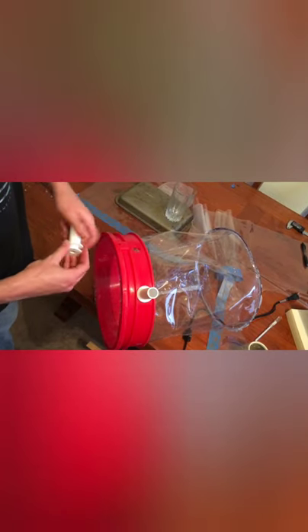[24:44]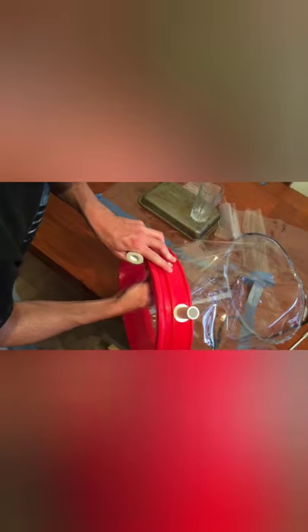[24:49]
All right, now we're gonna put this piece on the outside, thread this on. And we'll do the same. So the idea is one's gonna be the inlet, one is gonna be the outlet for air coming in. So we'll have straight air coming in from the hospital supply, and then we'll have it coming out once it's saturated with CO2 through the outlet. Same thing, we'll just thread this one by hand.
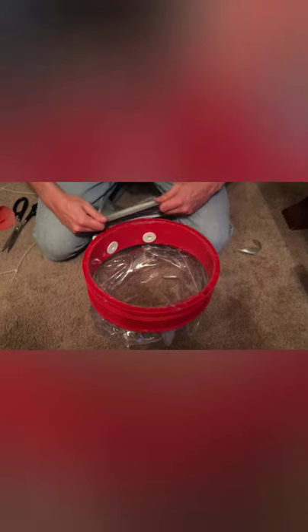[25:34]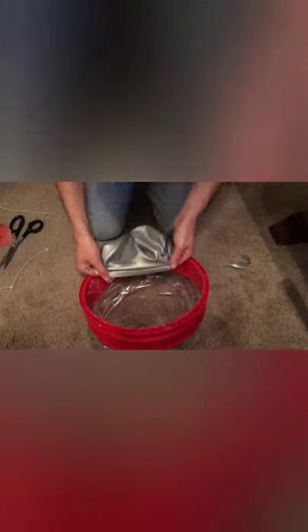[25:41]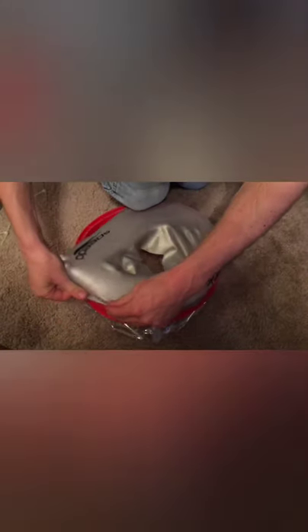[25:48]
Okay. And then really the last thing. So I've got this swim cap here, and I went ahead and cut a hole that's approximately 2.5-3 inches in diameter. And it's easier to do this with two people, but I'll show you a way you can do it just one person. So I'm gonna catch this on the outer lip. I'm gonna throw my knee on it, just hold it in place. I'm gonna proceed to wrap it all the way around.
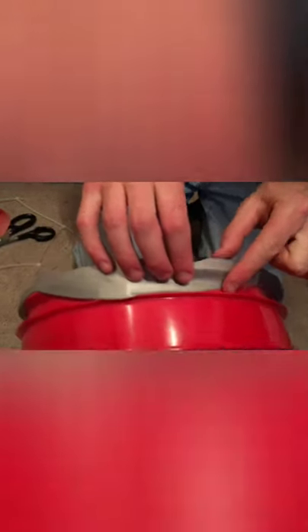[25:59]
Now what I'm gonna do is I'm gonna make sure that this collar piece is coming up ideally to this line here, because what we're gonna do in a sec is we're gonna secure it down with a zip tie. So I'm just kind of going around, making sure that I have it nice and high up. You might have to, you know, give slack in certain areas, take slack away. Like this spot, definitely gonna give some slack. Take some slack here. Take some slack here. And take some slack here.
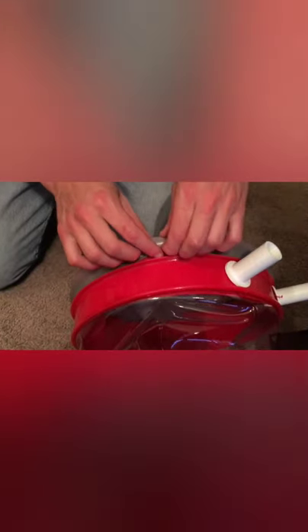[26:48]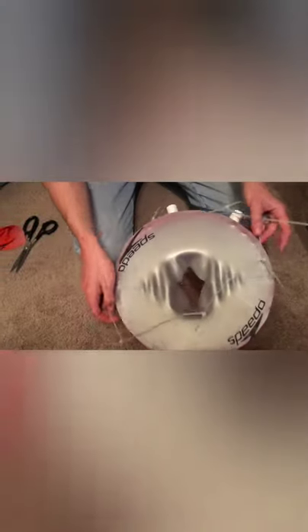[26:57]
Okay, so now next thing I'm gonna do is I'm gonna go ahead and take some zip ties. I've already tied these together. I just find it to be a little bit easier. And we're gonna wrap this around. Okay. And now what we're gonna do is we want this zip tie to kind of be touching this bottom lip. And we're gonna start to go around, make sure it's positioned correctly. And then once it is positioned correctly, we're gonna go ahead and secure this down as tight as we can get it. So that looks good to me. That's positioned good all the way around.
So I'm gonna start to secure it down, going through, tightening up all these zip ties, making sure that I still have the swim cap under the zip ties all the way around. And then what I'm gonna do now is I'm gonna take a pair of pliers to really make sure I get this on there tight. As tight as possible. The tighter you can get this, the better.
Alright, so that is good. So now the only thing left for me to do is I'm just gonna go ahead and cut these zip ties. And there you have a NIV helmet, DIY.